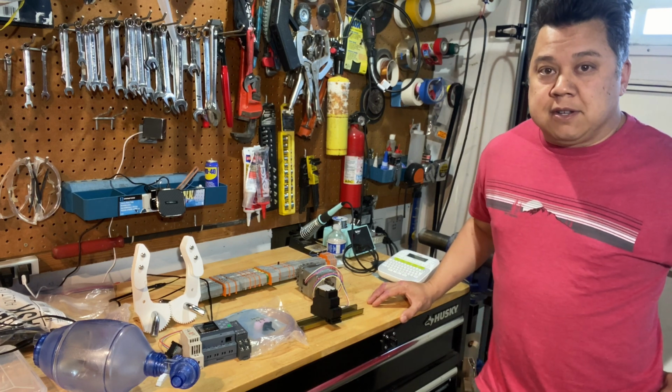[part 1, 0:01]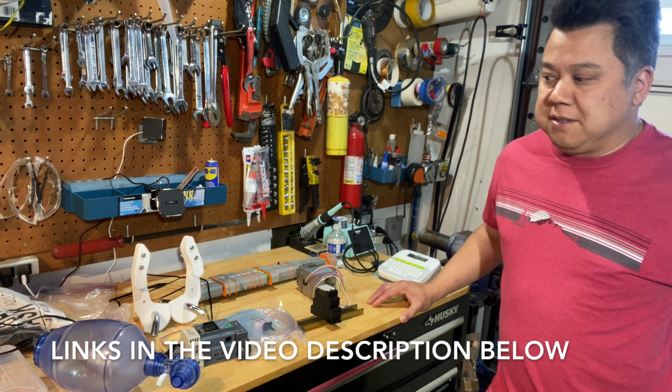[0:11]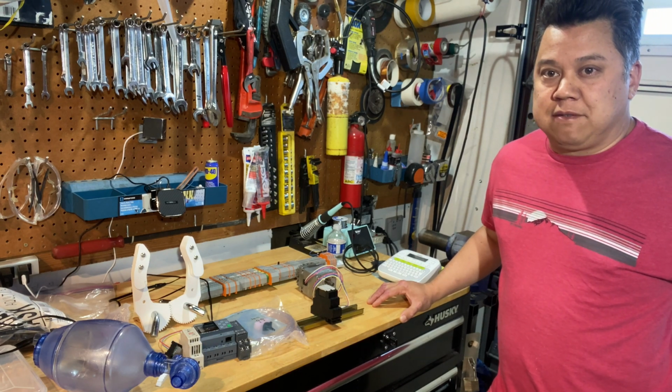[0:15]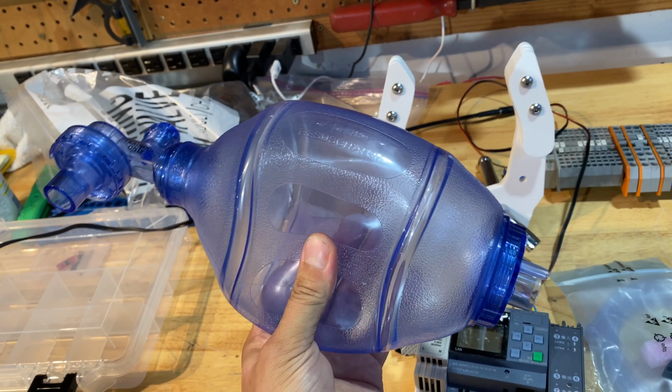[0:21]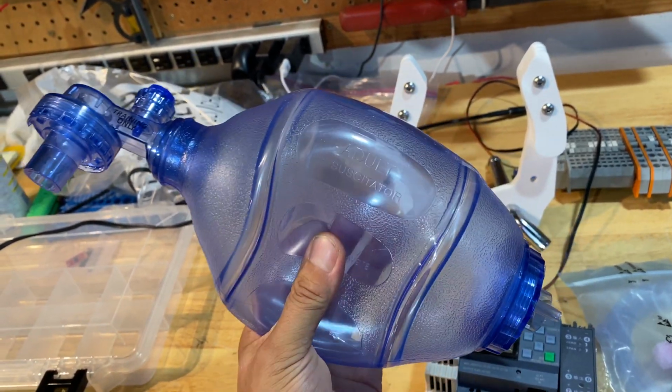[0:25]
Well, today I'm starting a new project, which will take me a couple weeks to complete, I think. I'm going to try and build a low-cost ventilator using plans online from different websites, and I had a bunch of parts come in today, so I'm going to show you what I've got on hand and some of the parts that I've started fabricating. So let's take a look. I don't know medical device terminology, but I'll do my best.
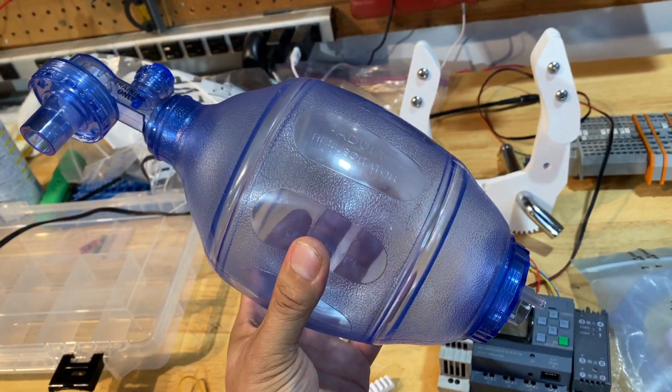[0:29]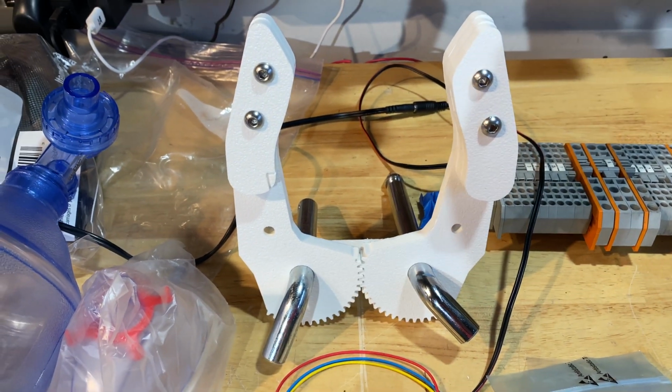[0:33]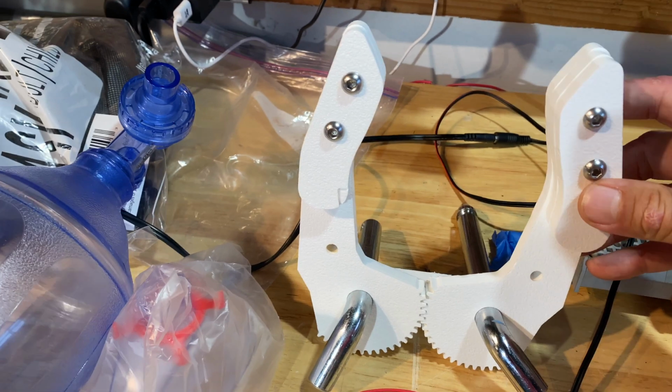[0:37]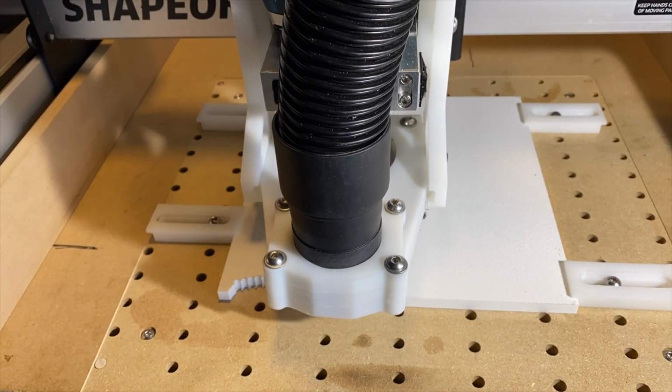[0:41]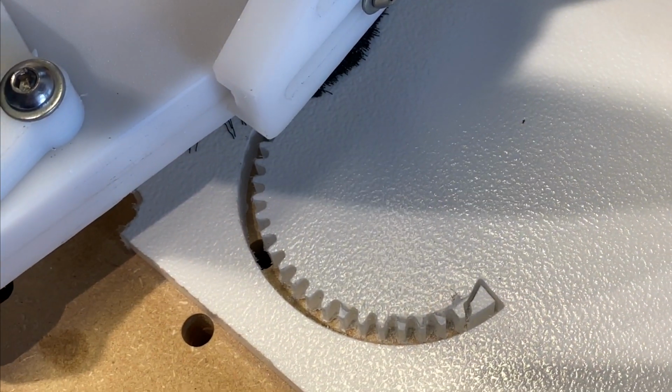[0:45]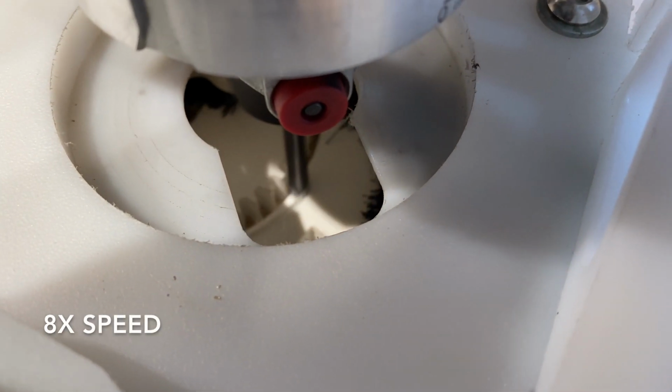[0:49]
So this is the breather bag, and I've started fabricating these hands, which will squeeze the bag. I built these on my Shapeoko CNC machine. Machining just the teeth took about an hour per arm. I used a 16th inch end mill for the teeth, and then I went back with a 1/4 inch end mill to cut the rest of the arm out and drill the holes.
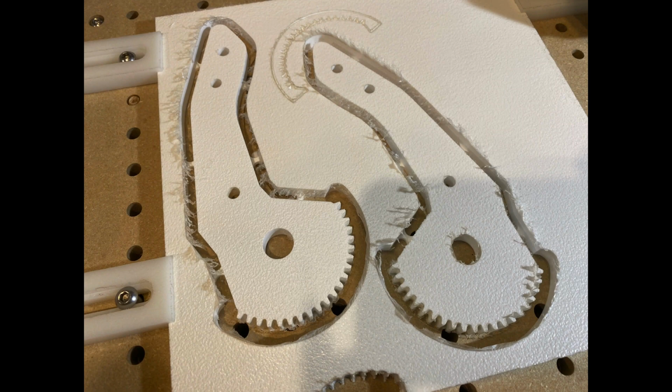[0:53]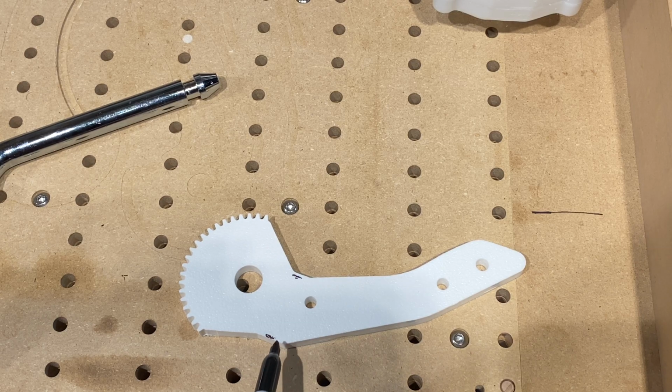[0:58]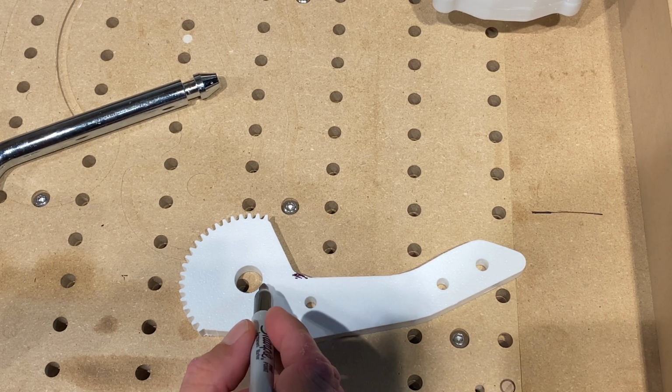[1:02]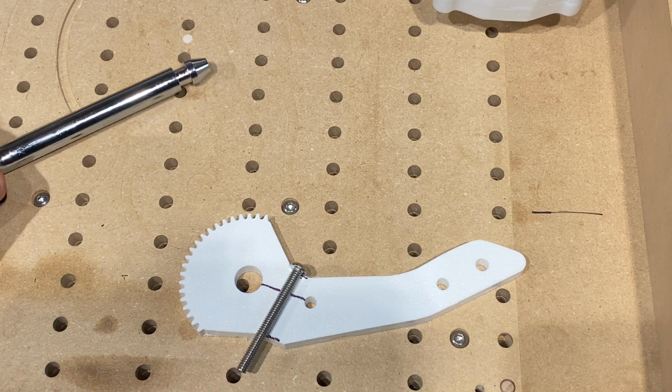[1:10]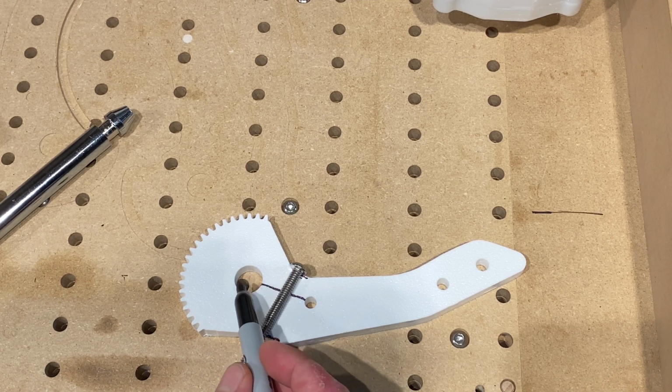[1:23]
I modified the original design of the arms by putting a flat spot here at the top and bottom, and if needed, I can cut a slot here so that the arm gets pinched onto the shaft rather than rotating on the shaft. So I can add a pinch bolt and a nut on the other side. And this is so if I want to go direct drive to rotate the arms, instead of using the gear teeth to move the arms, I'll have that option.
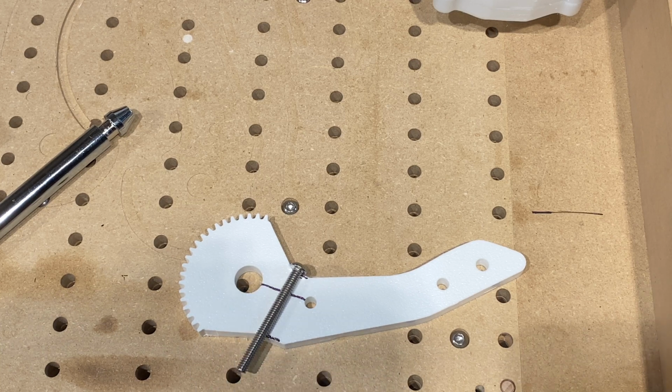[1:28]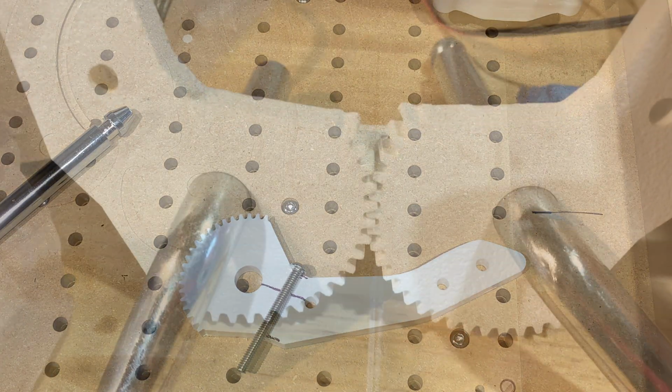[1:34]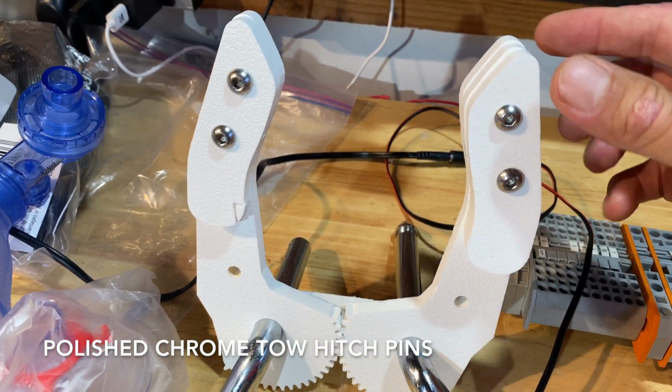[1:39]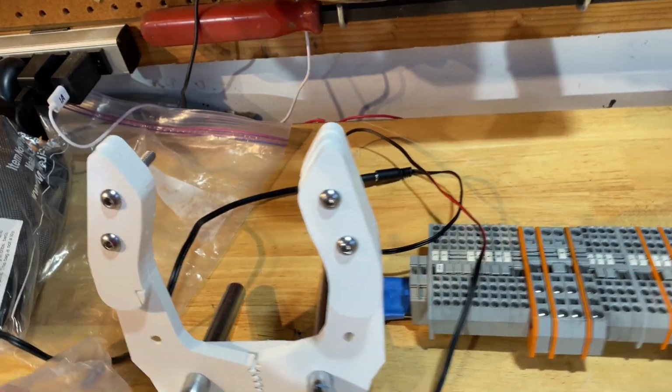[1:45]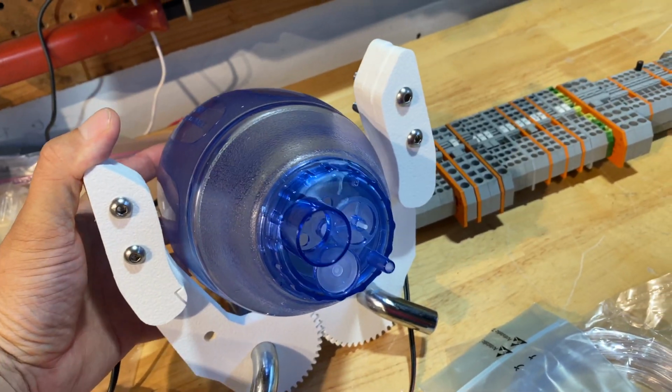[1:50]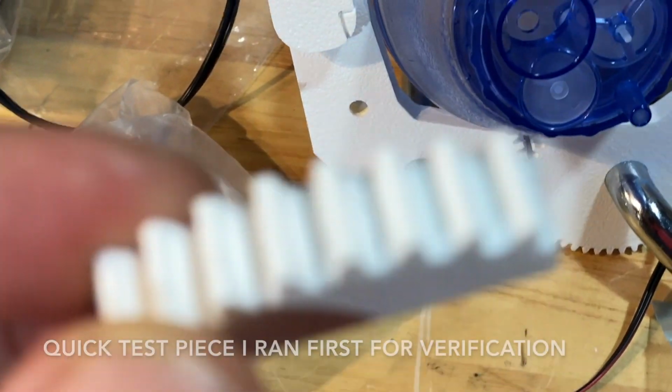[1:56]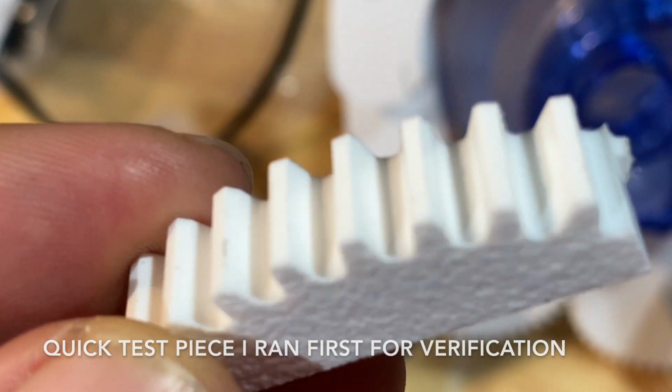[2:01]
I also went with a larger diameter shaft because I'm using plastic instead of aluminum. I wanted to spread that force over a larger area. So there'll be more fingers to spread the contact area over a larger area on the bag. So the bag will just fit in here, and the hand will squeeze the bag as a human hand would do. Here's kind of a close-up of the machine quality from my hobby CNC machine. It looks quite good, I think.
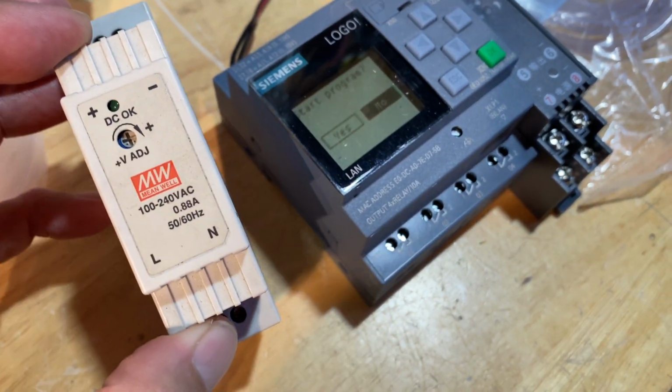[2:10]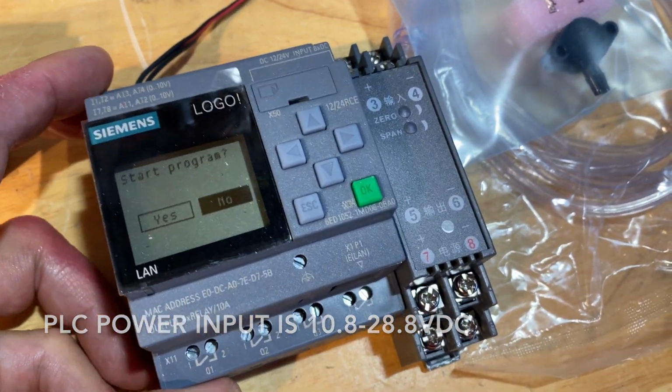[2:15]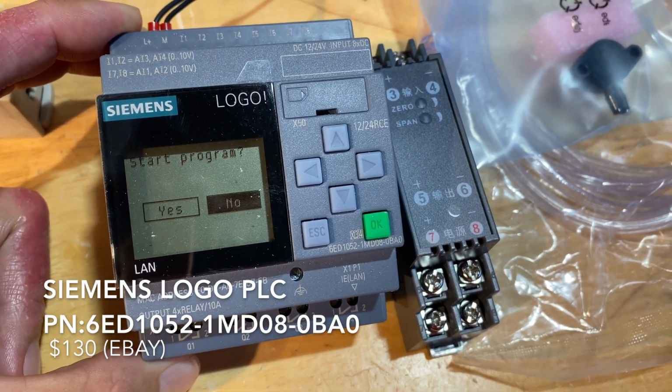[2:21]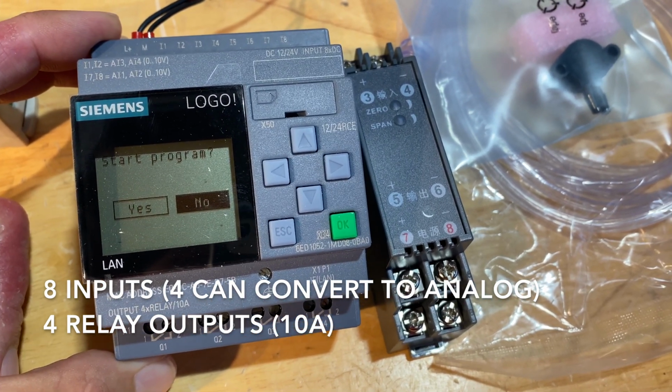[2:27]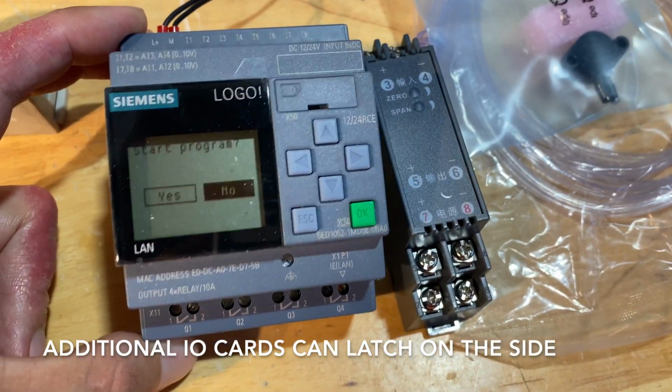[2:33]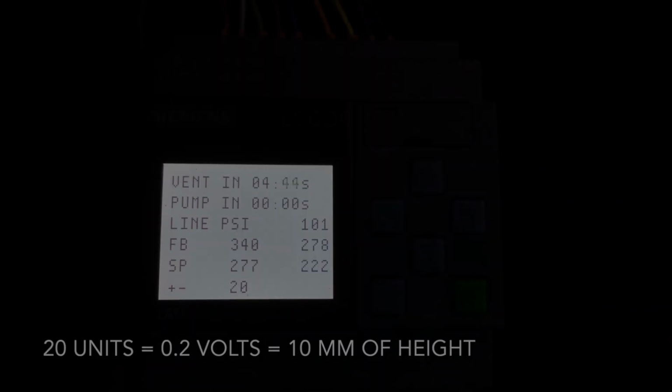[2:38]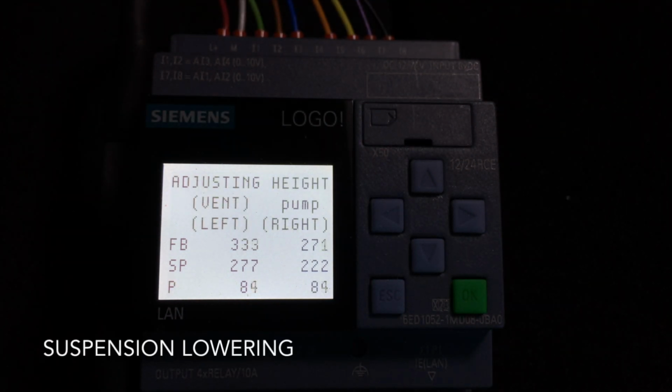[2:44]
This is just a 24-volt power supply to power the PLC. This is my PLC. It has 4 analog inputs, 4 digital inputs, and 4 relay outputs. And admittedly, relay outputs aren't ideal for this application because they'll be cycled a lot. I can add on a module to the side to increase I/O and get some solid state outputs. I really love these Siemens LOGO PLCs. This is the same PLC I used on my Volkswagen Touareg to control the air suspension that I added.
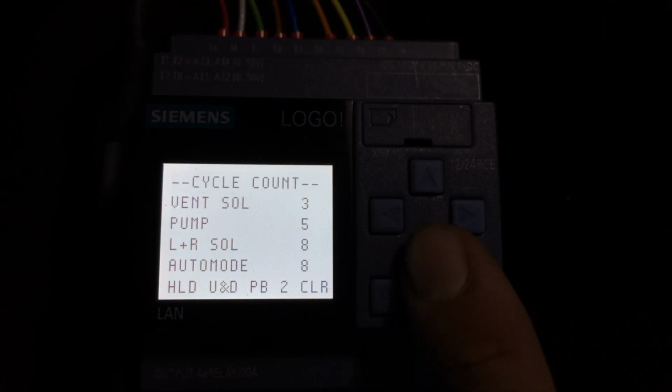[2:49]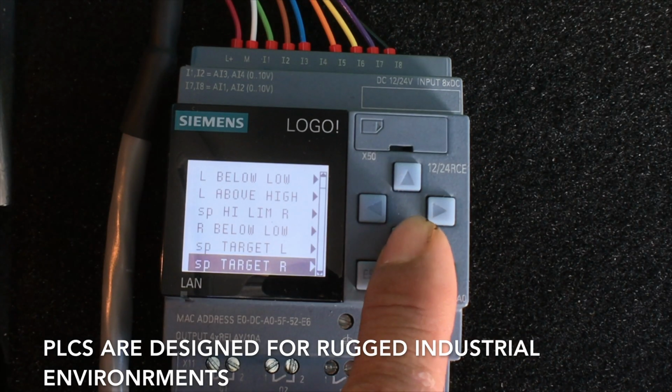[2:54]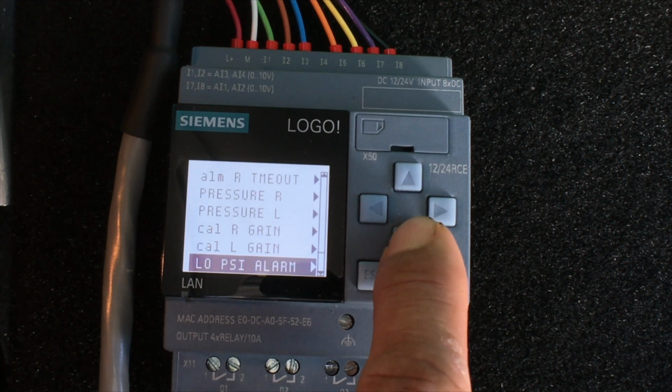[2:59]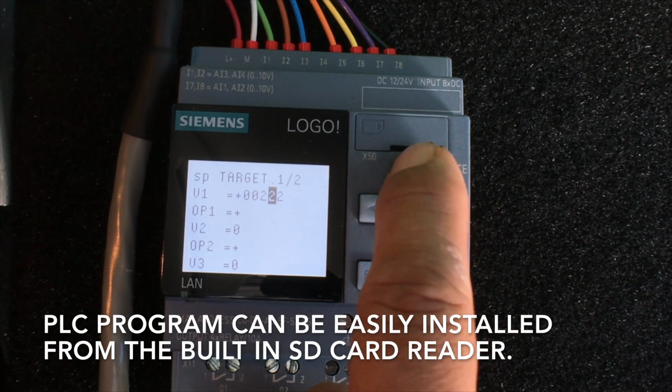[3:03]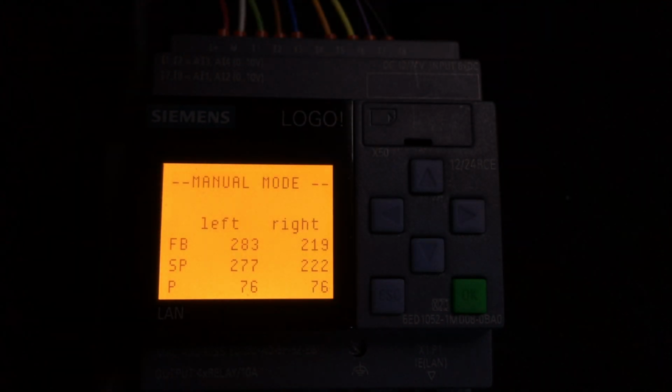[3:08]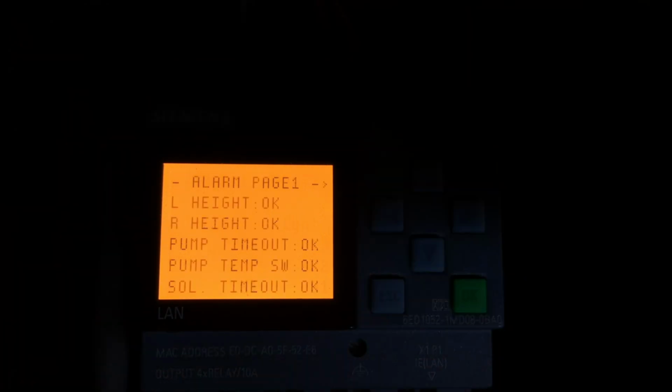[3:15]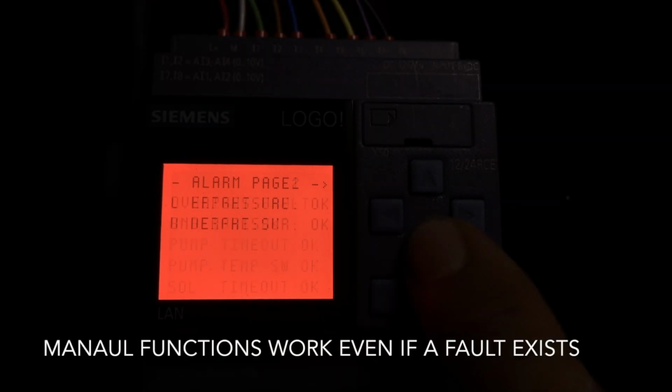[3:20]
It's really nice that it has a 6-line LCD. You can display a lot of information. You can display lots of screens. You can change any of the variables and timer set points inside the PLC. Pretty much any variable or constant you can change. You can also change the backlight color. So if you have a warning pop up, you can have it turn orange. Or if you have an alarm come up, you can have it turn red or flash different colors. They're really handy, quick to program. They have SD card slots and Ethernet built in.
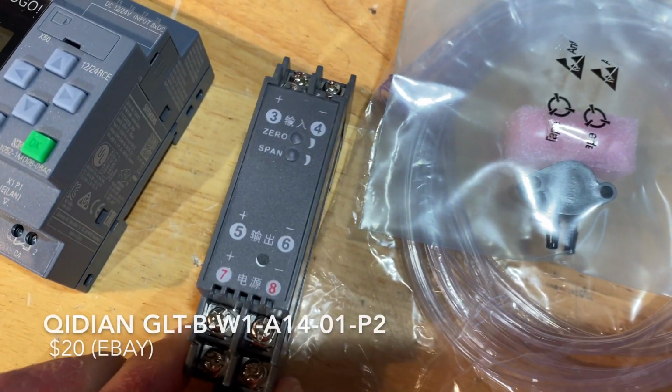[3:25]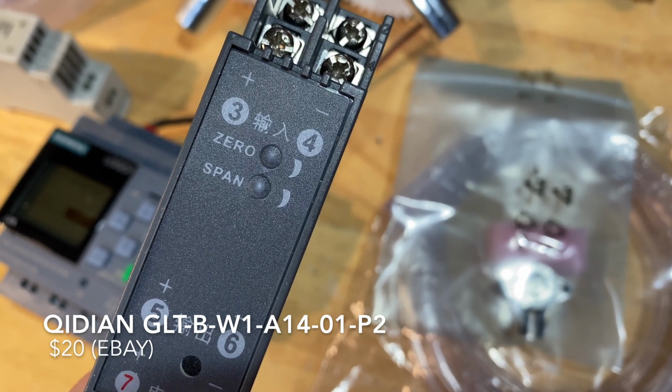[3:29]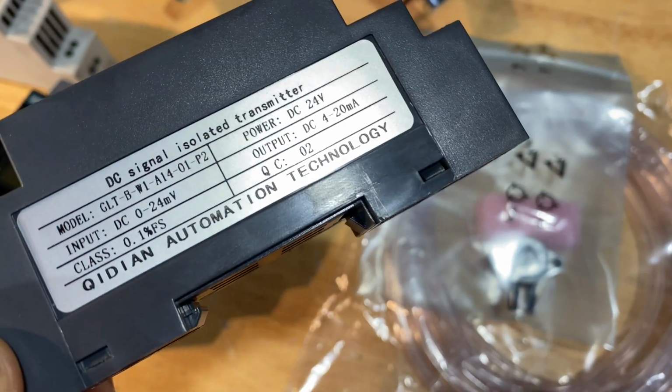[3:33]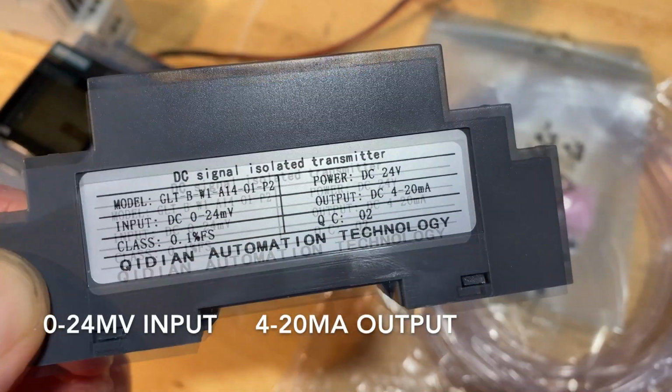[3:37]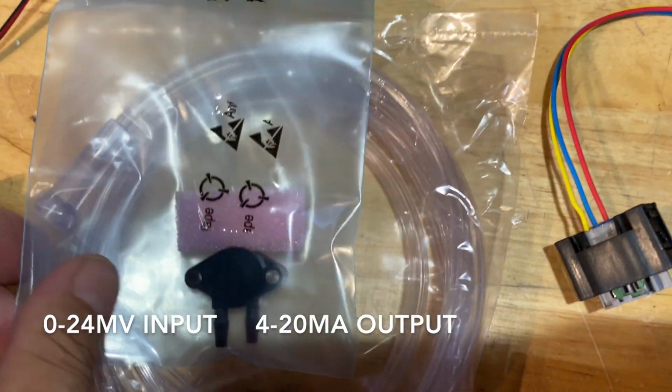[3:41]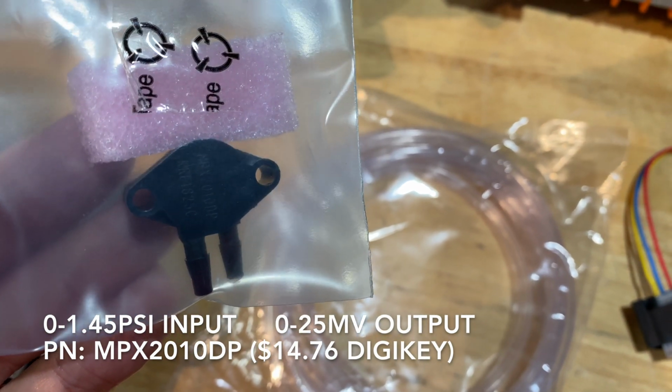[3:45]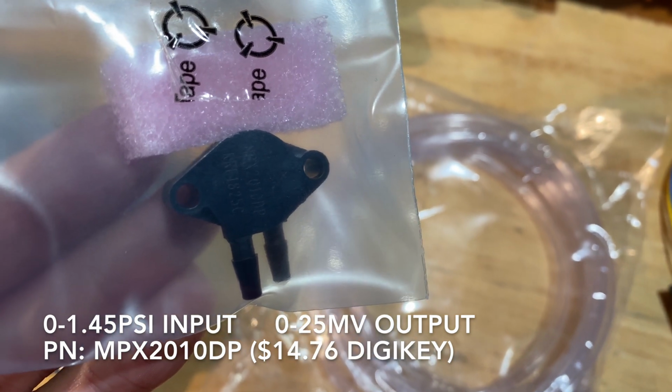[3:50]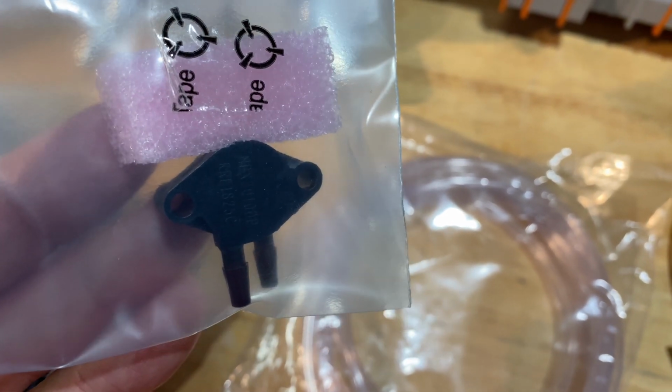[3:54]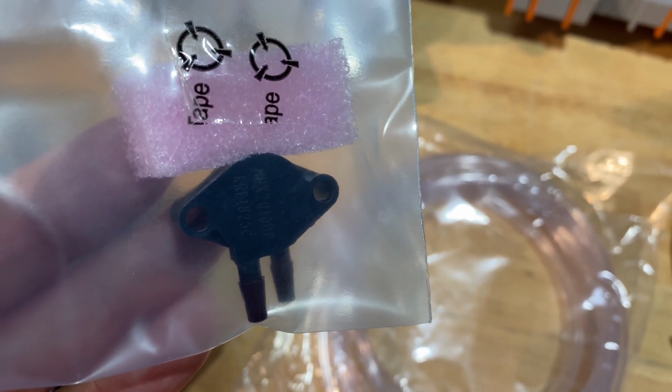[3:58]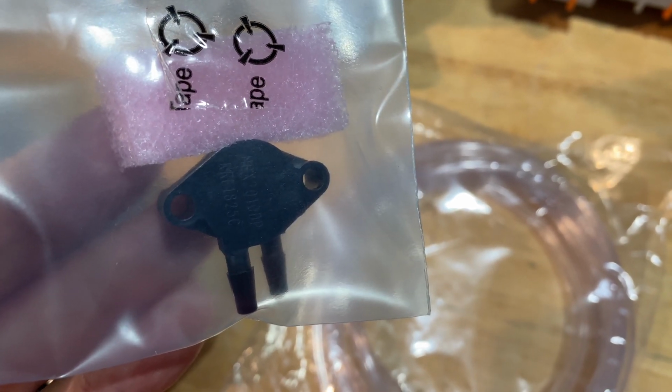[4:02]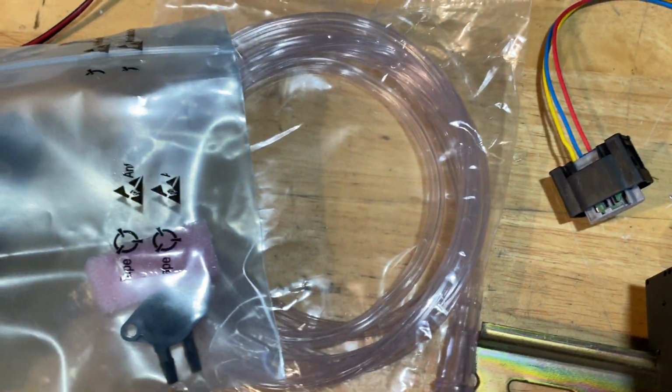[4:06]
This is a signal conditioner. It kind of acts like a load cell amplifier. So you can adjust span and zero of the output, and it's basically converting 0 to 24 millivolts into a 4 to 20 milliamp signal that the PLC can read. And that will be connected to this pressure transducer. This pressure transducer measures up to 1.5 psi, which is about the max that a human can breathe out. And this will be used to measure the patient inhaling, and that will be a trigger to start the next cycle of breathing from the bag. And this is just some hose to hook up to the breathing mask to measure pressure.
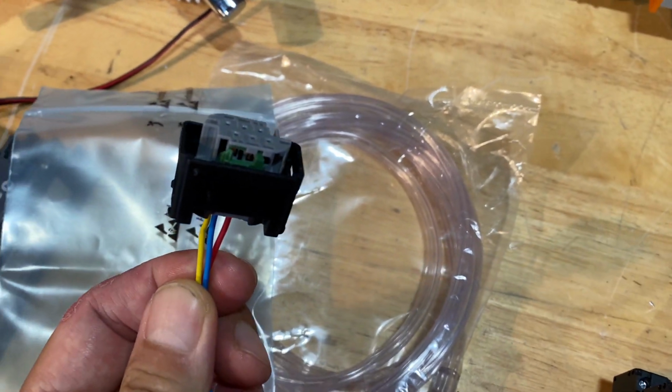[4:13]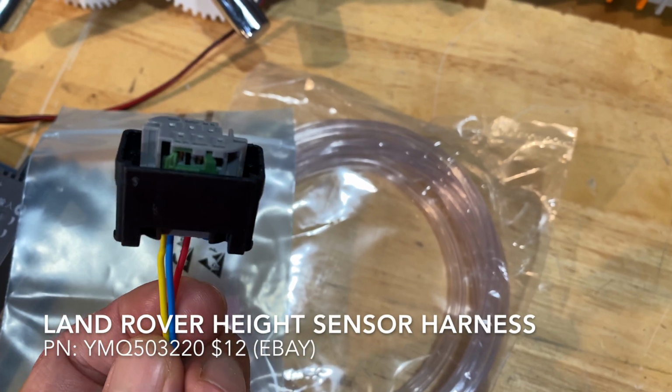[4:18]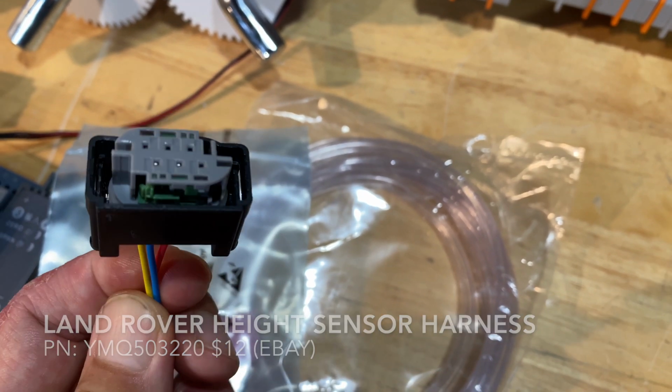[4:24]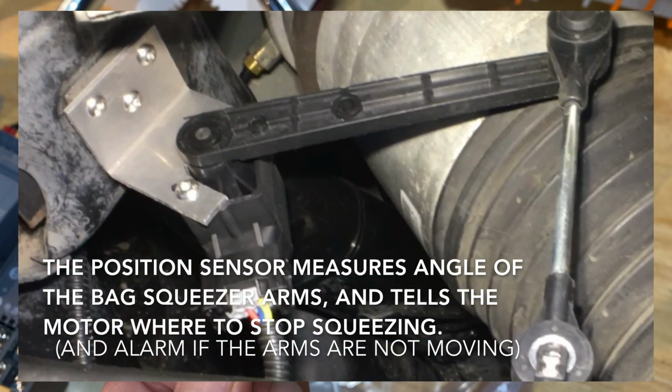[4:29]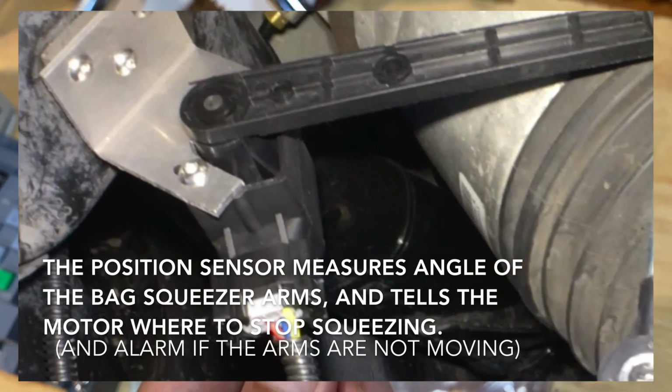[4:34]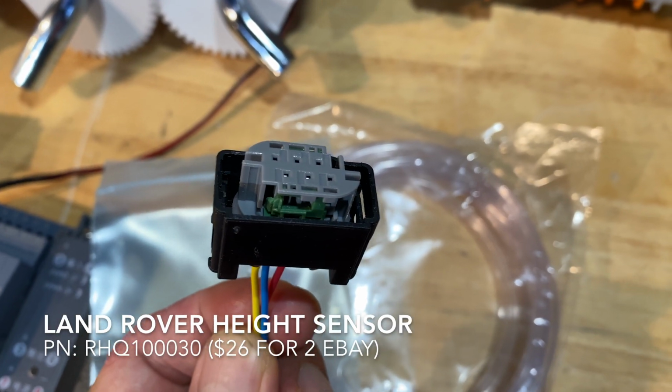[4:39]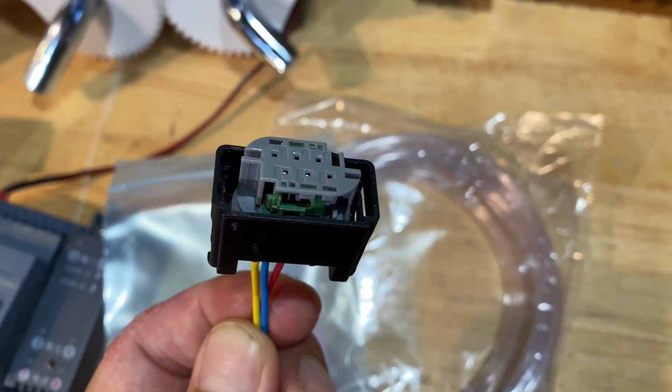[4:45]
I don't have my LVDT or Hall effect position sensor yet, but this is the wire harness for it. I'm using Land Rover ride height sensors because they're cheap. They're like $15. They're ruggedized, they're submersible rated, and they're rated for like continuous movement. And it's not like a wiper pot where the potentiometer will wear. This is a Hall effect sensor, so there's no wear involved.
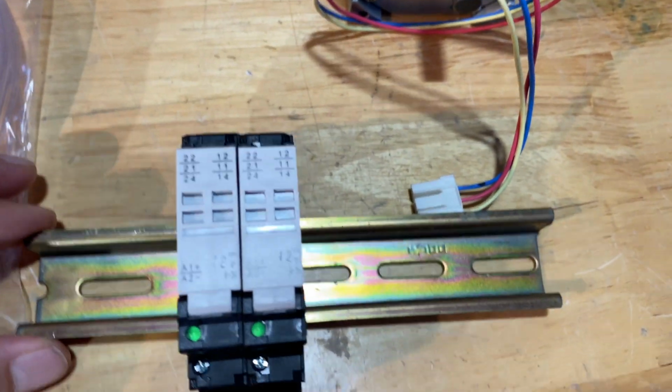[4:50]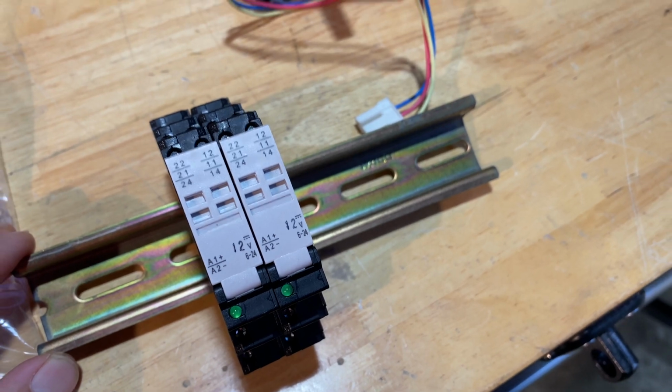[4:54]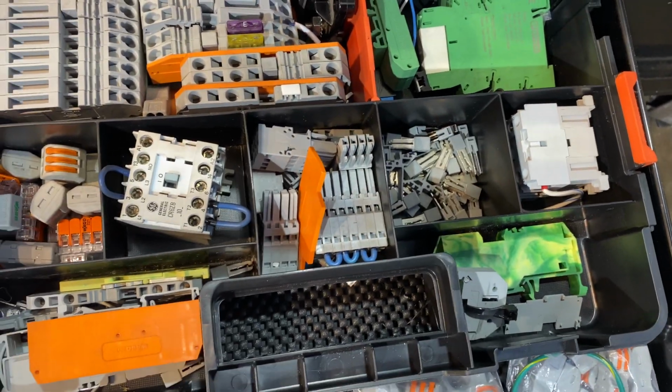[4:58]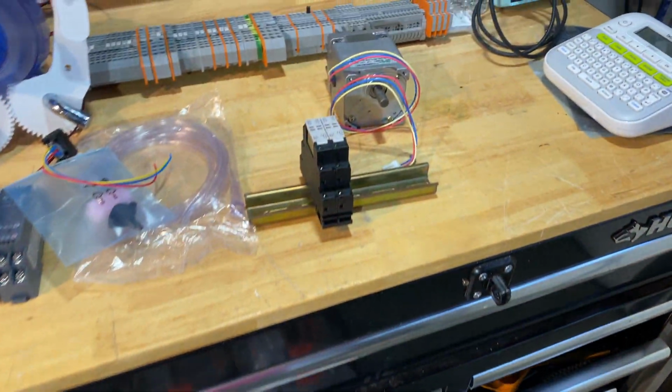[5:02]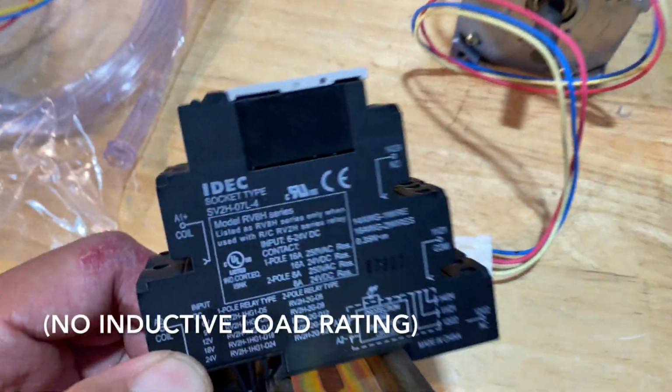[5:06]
I have these 2 relays that I'm going to use for driving this motor forwards and backwards. If those don't work, I have some larger contactors as well, but the motor is only 55 watts, so I think this little 16 amp relay should be more than sufficient.
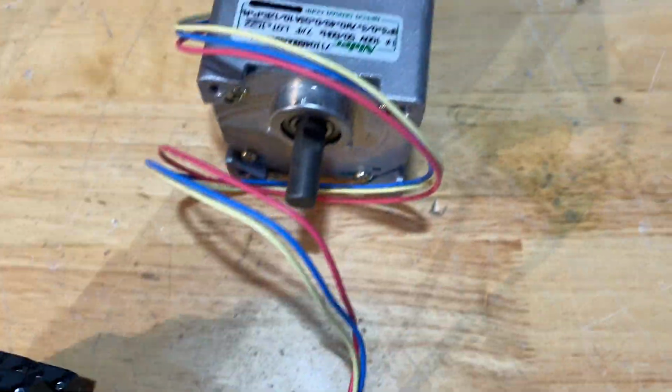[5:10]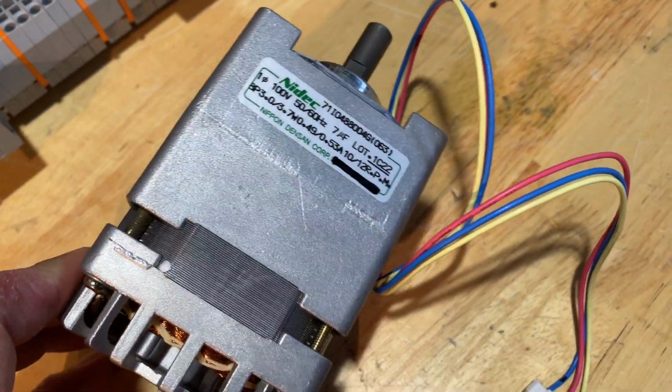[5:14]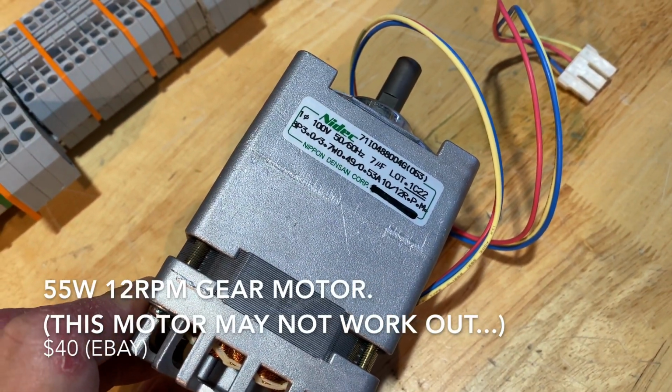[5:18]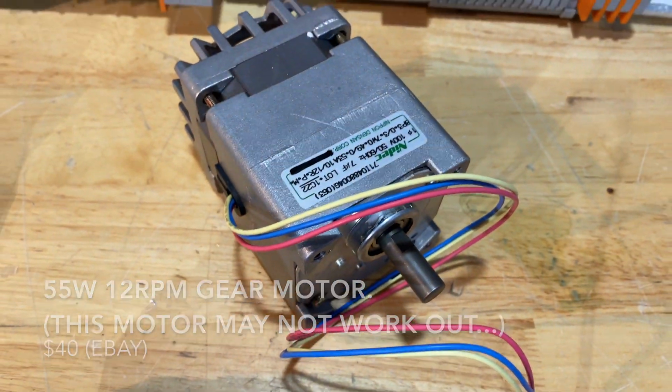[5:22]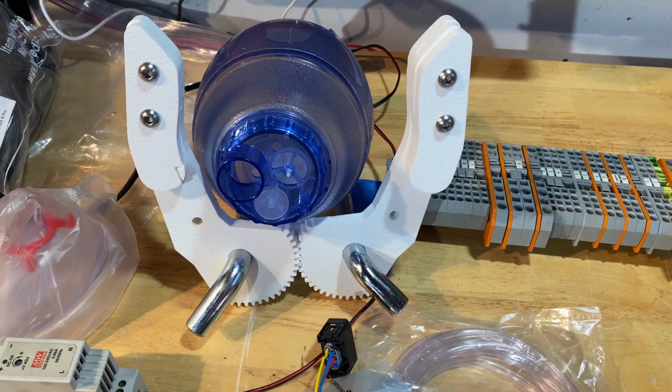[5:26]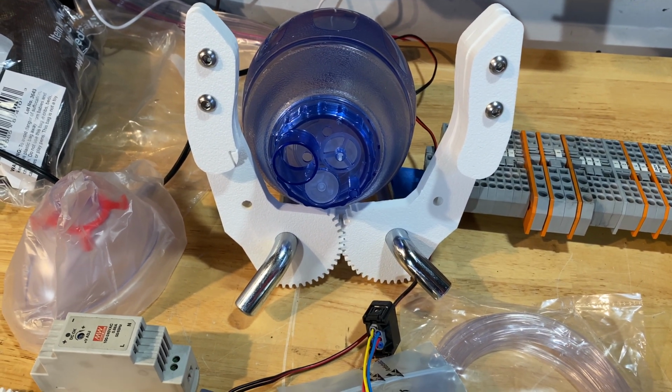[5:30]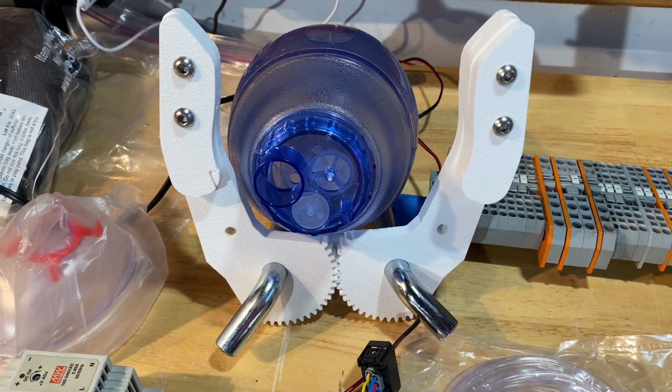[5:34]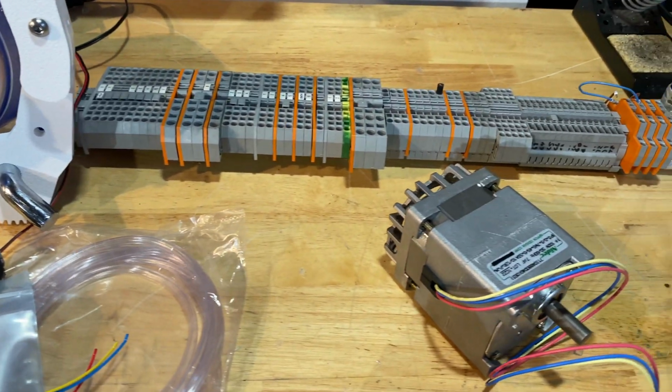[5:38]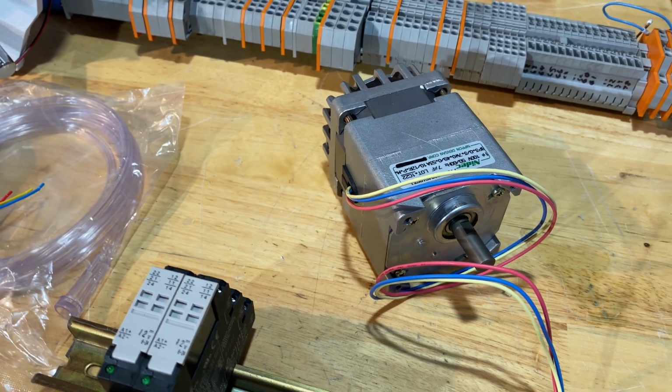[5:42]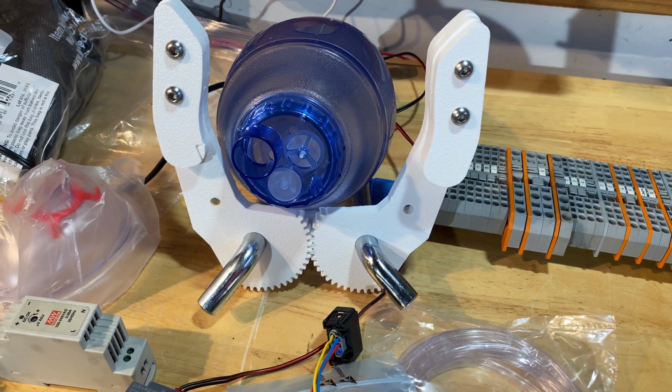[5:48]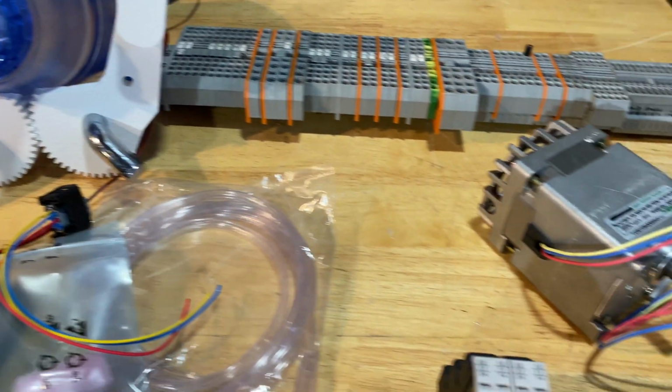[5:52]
This is my gear motor. It's rated to output 12 RPM, which means that it'll take 5 seconds to do one revolution. So I'm not quite sure if I'll need more gear reduction or not to slow the hand down. I want the hand to close in about 1 second. Depending on what size gear I make, I can change the speed of the hand. Ideally, this would be a DC motor and I could just pulse width modulate the RPM. So I may change the motor out for something more variable speed and ideally direct drive, but this was in stock and it's something to get me going.
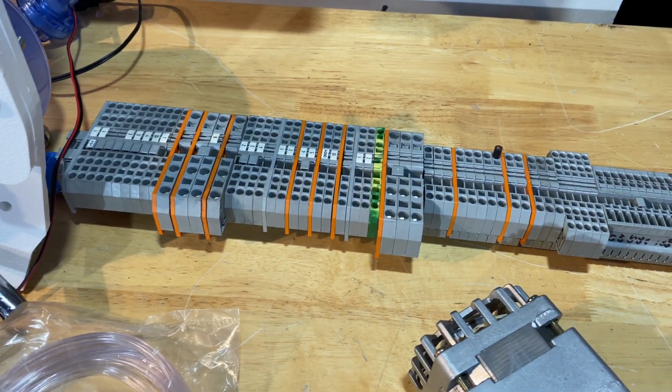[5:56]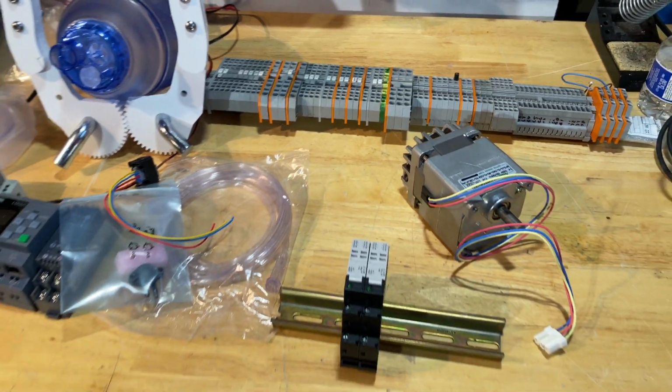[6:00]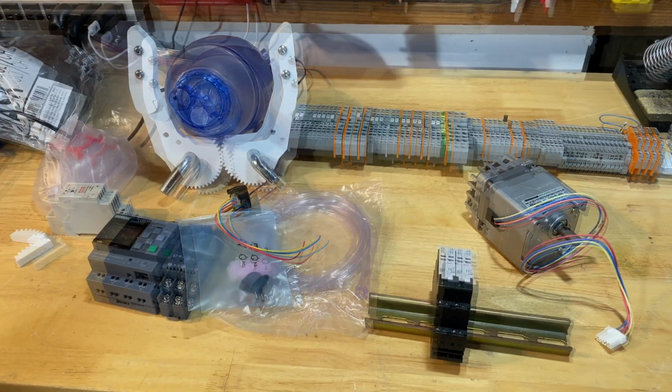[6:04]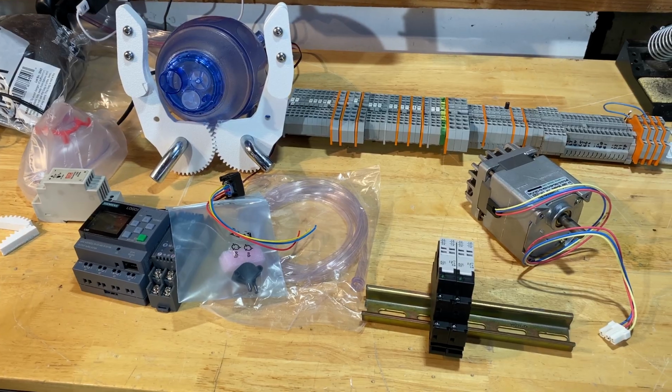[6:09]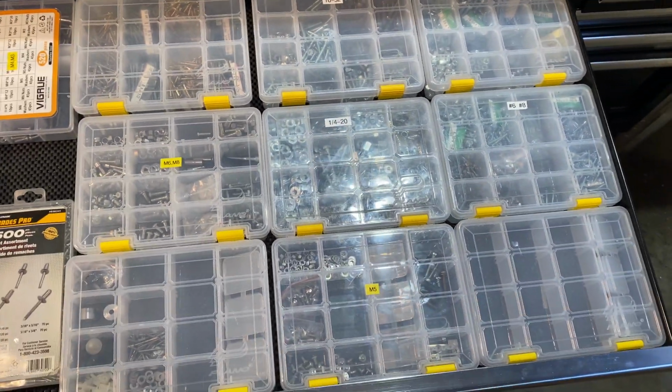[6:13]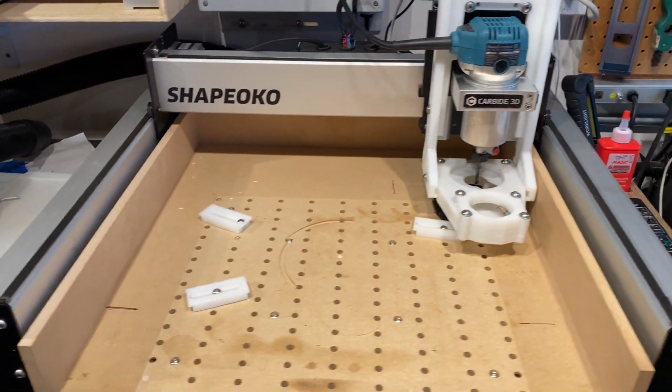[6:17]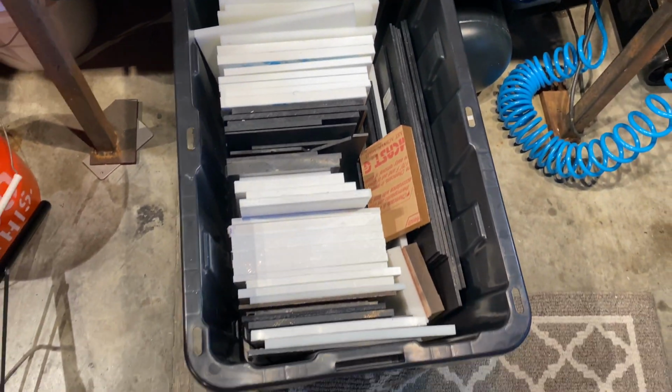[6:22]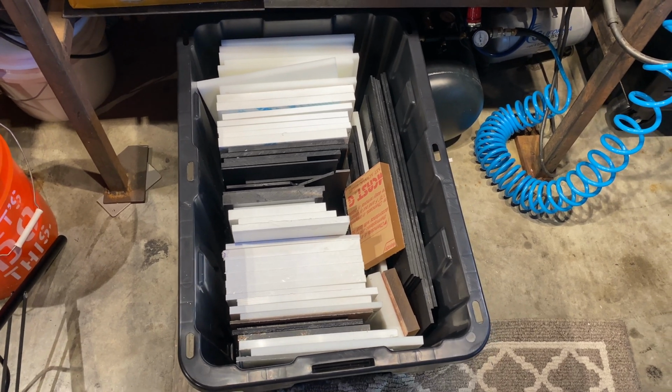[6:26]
And these are just a bunch of terminal blocks for connecting wires. So there you have it. This is all the parts I have on hand currently. I have a PEEP valve coming and an extension hose for the airbag. I also have a good stock of nuts and bolts. And this is the CNC router that I'm using. It's a Shapeoko 3. And I also have plenty of stock of scrap plastic from TAP Plastics.
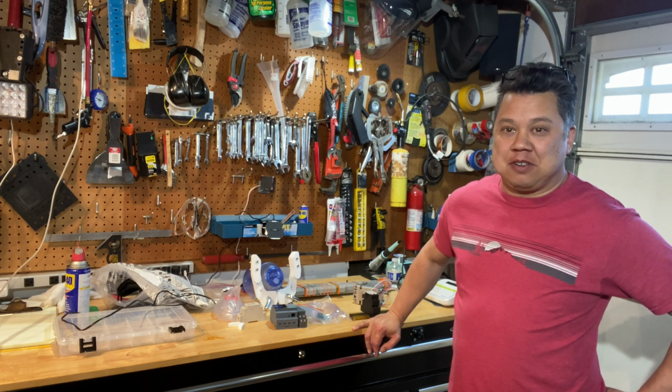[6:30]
Well, there you have it. I don't know if this project's actually going to come to fruition or not, but I have pretty much all the parts on hand and I'm excited to start putting it together.
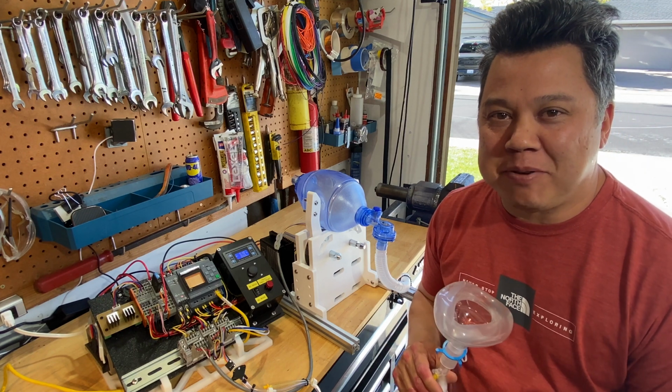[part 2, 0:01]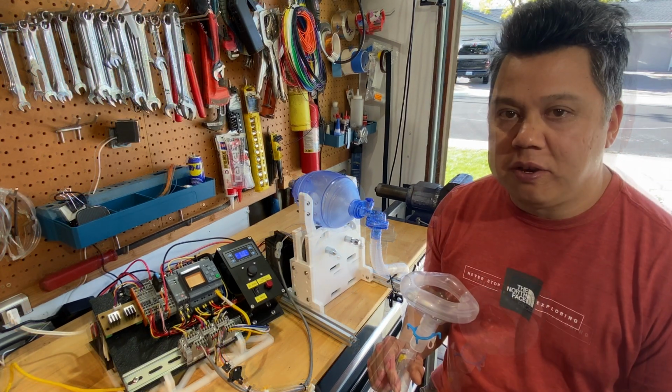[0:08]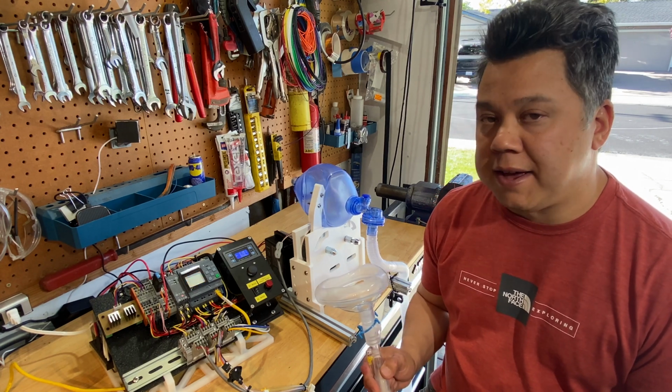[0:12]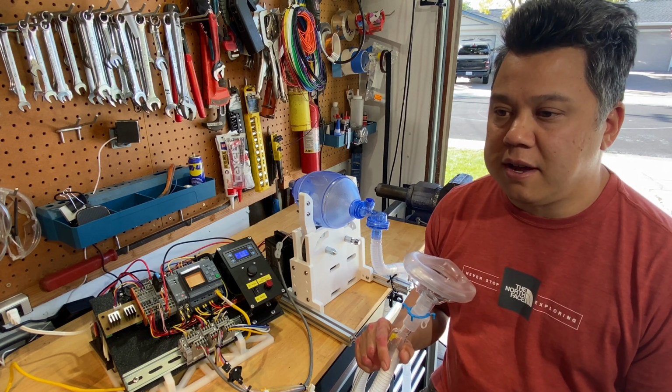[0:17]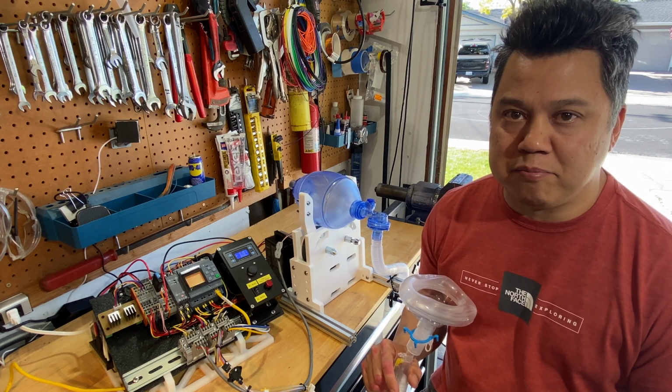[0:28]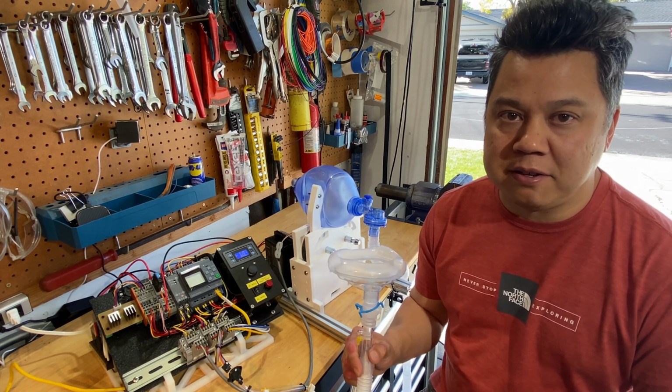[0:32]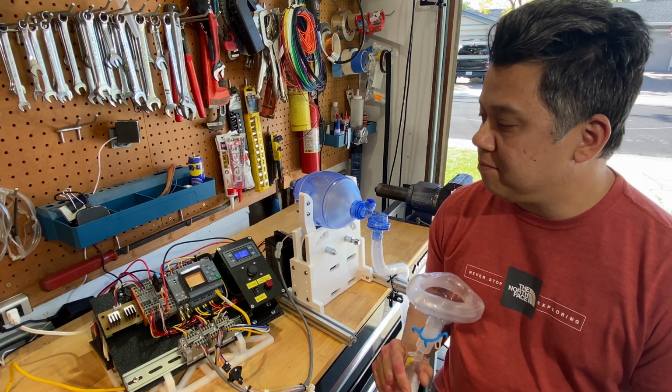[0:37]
As you can see, I have the hardware and software working now. One thing that makes this ventilator project different than others is that this one has a pressure sensor that senses when the patient is trying to inhale, and it times the breath cycle with the patient inhaling. That's different than a lot of the other ventilator projects that are out there that are just running asynchronously based on a timer. And they could be forcing air in while the patient's trying to exhale. So this one always stays in sync, and I can show you how it does that.
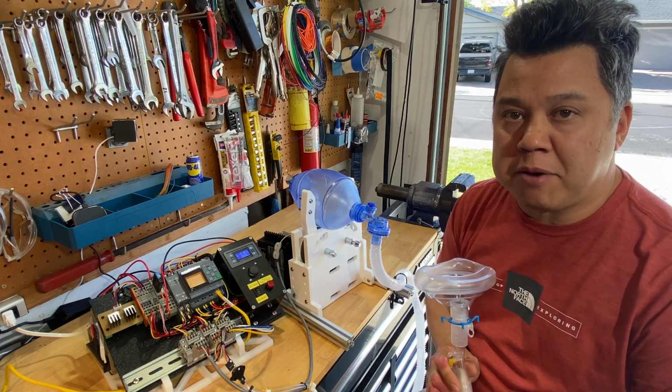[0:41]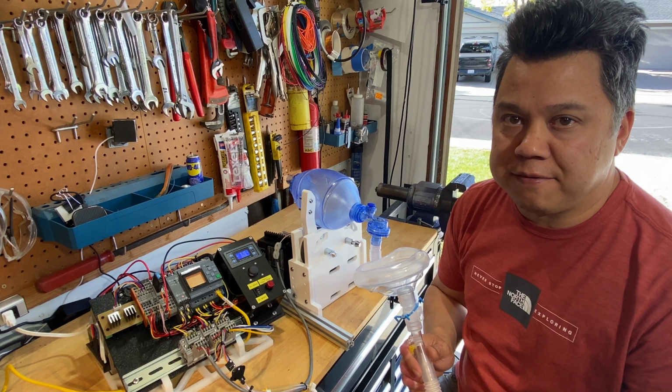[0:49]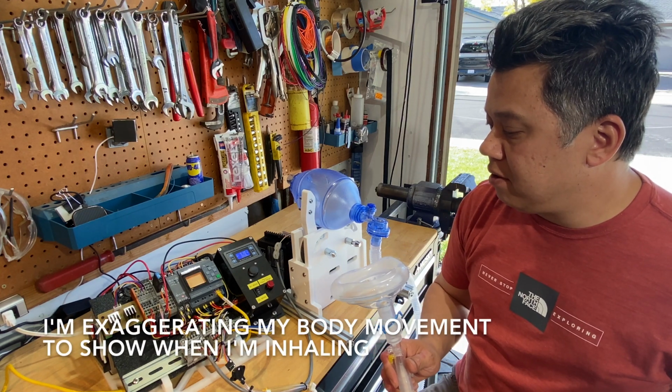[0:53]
The screen turns orange when it's in a wait state, waiting for the patient to inhale. And if the patient takes too long or the inhale's not sensed, it will force a breath after a few seconds, and that's all configurable on the screen. So I'll show you now how the breath sensing works.
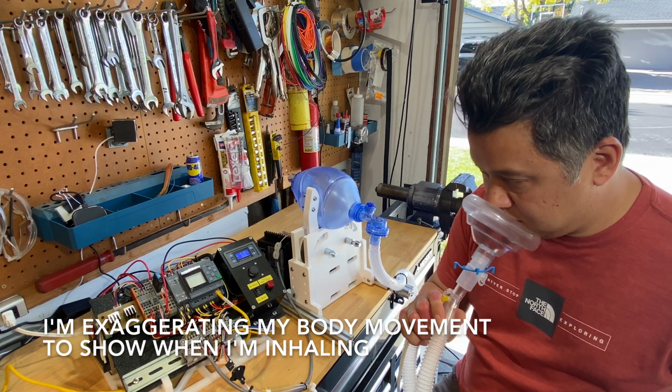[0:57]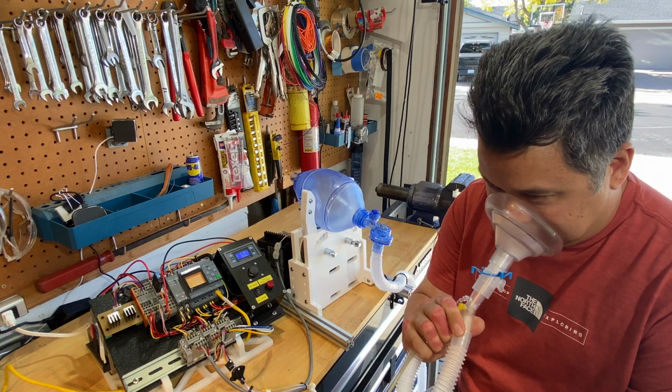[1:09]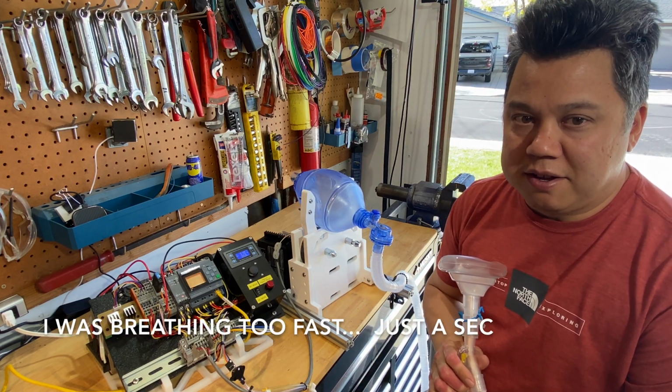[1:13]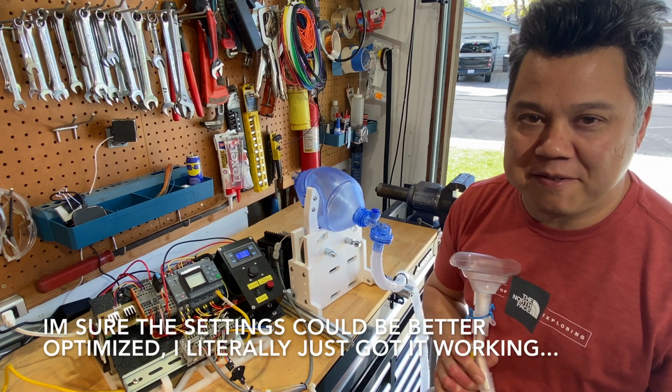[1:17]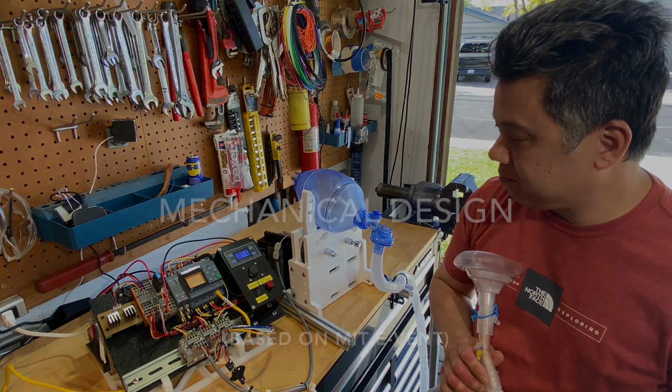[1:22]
The sensation's a bit like breathing through a scuba regulator. I've never used a ventilator before, so it's kind of a new experience for me.
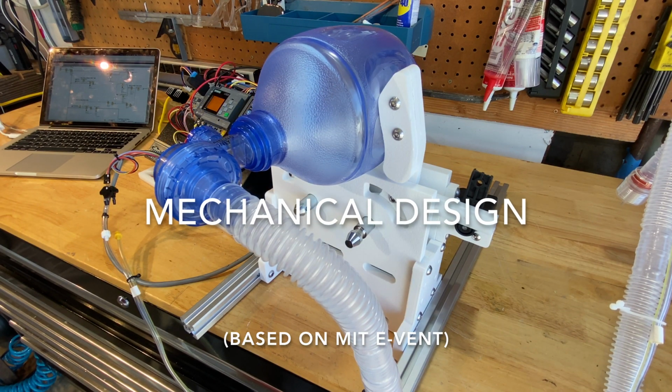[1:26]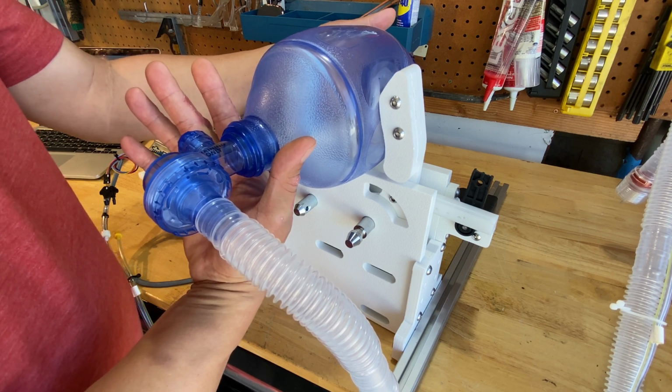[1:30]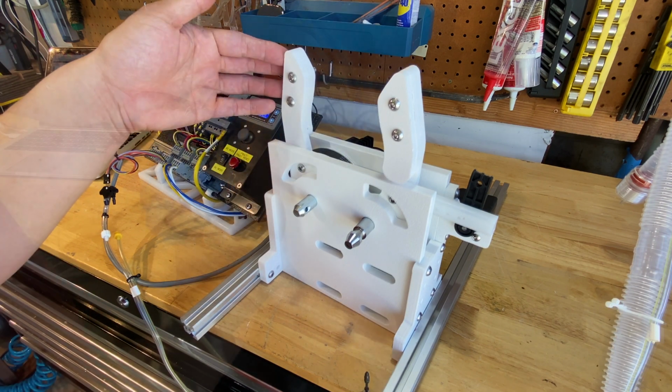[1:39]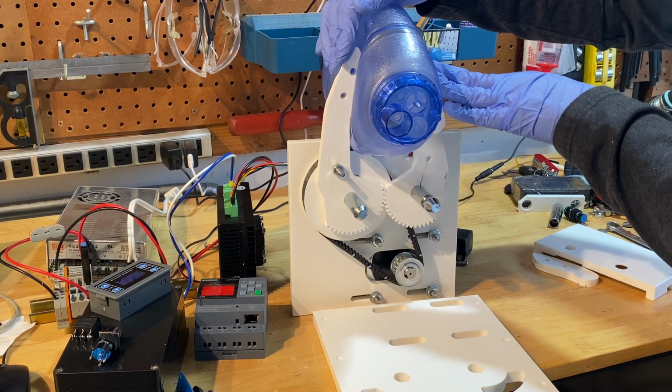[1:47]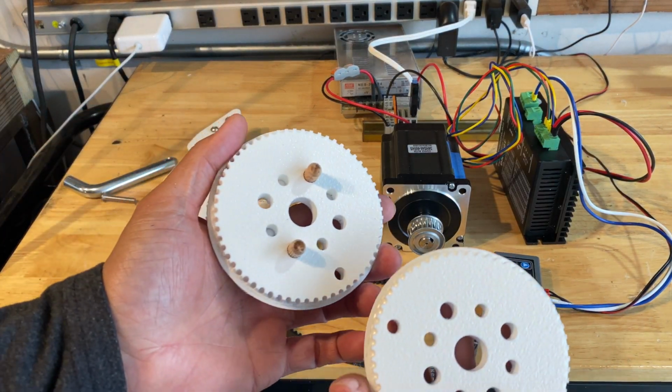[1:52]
This is the mechanical portion of the project. I'll obviously have a cradle here to hold the bag in place, but I didn't want to waste the plastic because all the stores are closed at the moment because of the coronavirus. The arms are driven by a timing belt and a stepper motor. I'm using a NEMA 34 stepper with a 3-to-1 belt ratio. I made the timing belt sprocket on my CNC machine. Well, this is how the timing belt sprockets came out.
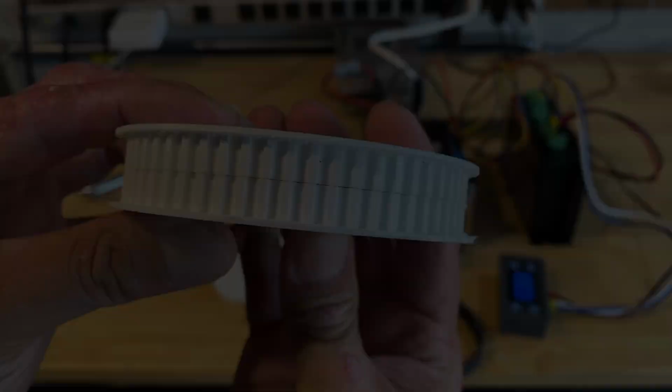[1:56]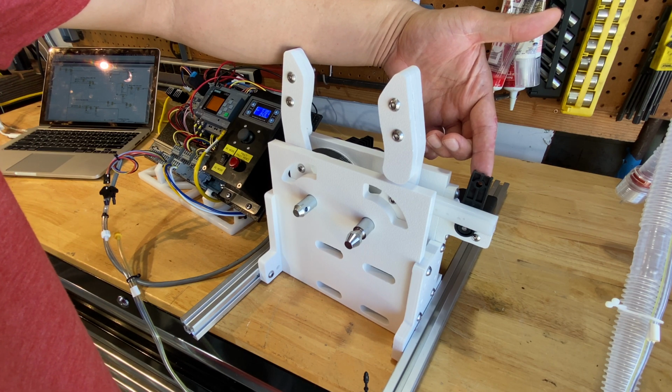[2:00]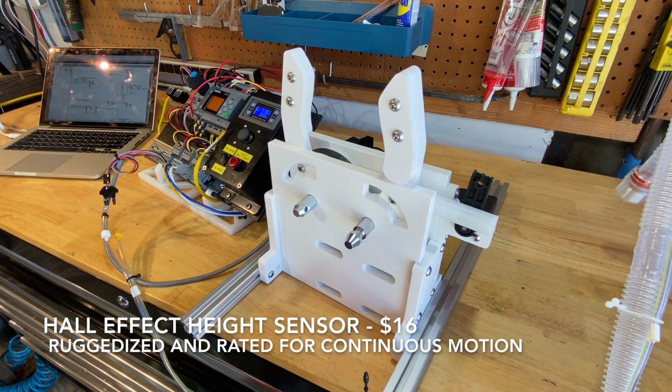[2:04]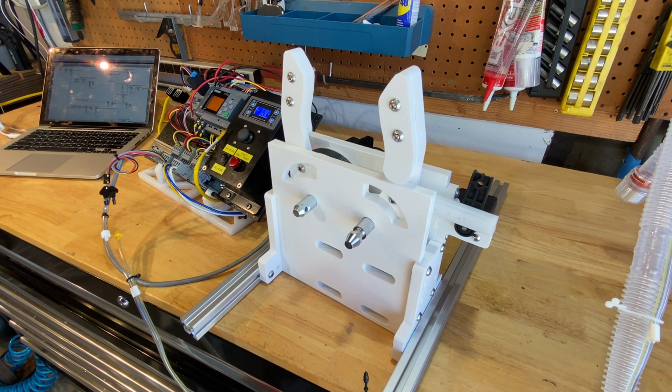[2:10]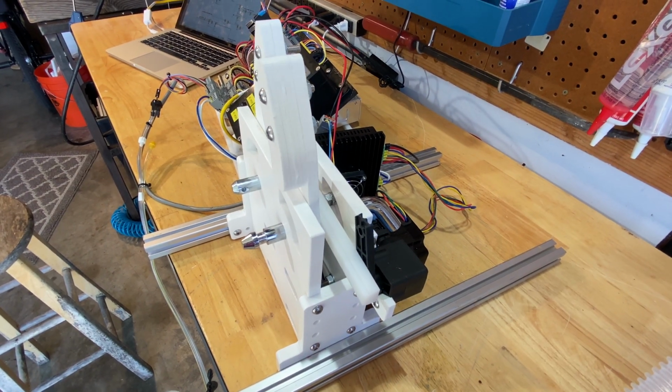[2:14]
I'm using this angle position sensor. This is from a Land Rover. It's used to measure the ride height on the air suspension. And it's a solid state device that uses a Hall effect, so there's no wiper arm that's gonna wear out. This position sensor is what allows the PLC to control the open and closed position of the arms.
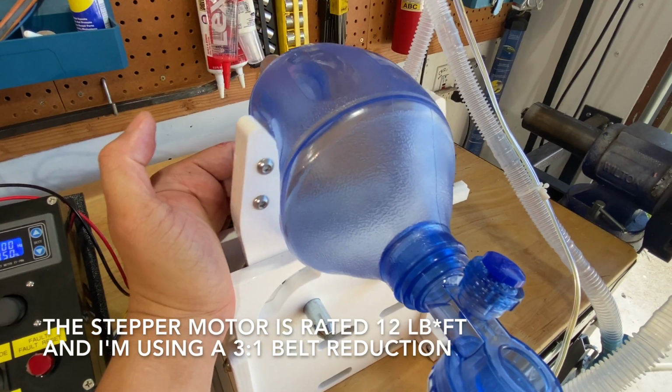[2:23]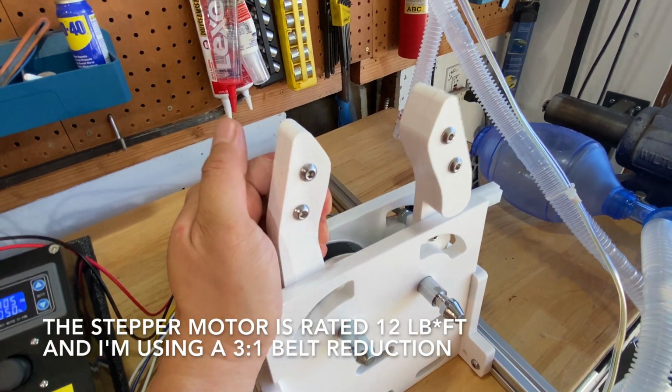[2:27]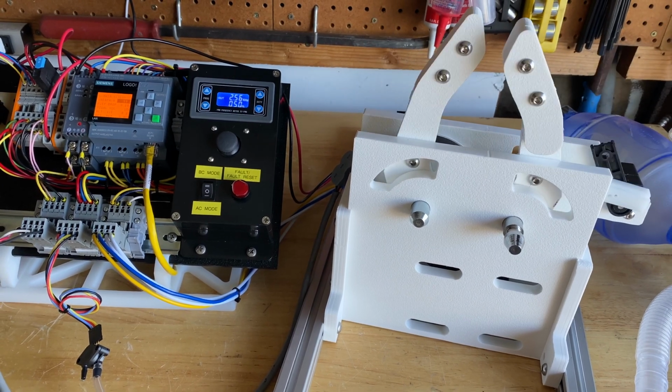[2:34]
The arm's quite strong. It's closing with about 25 pounds of force. There's not much I can do to stop them from closing. Just curious to see how fast we can go.
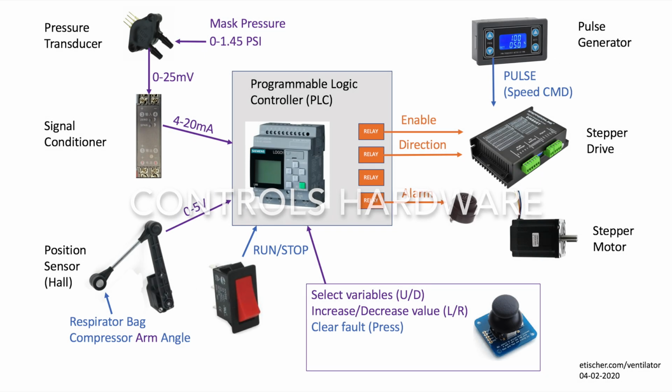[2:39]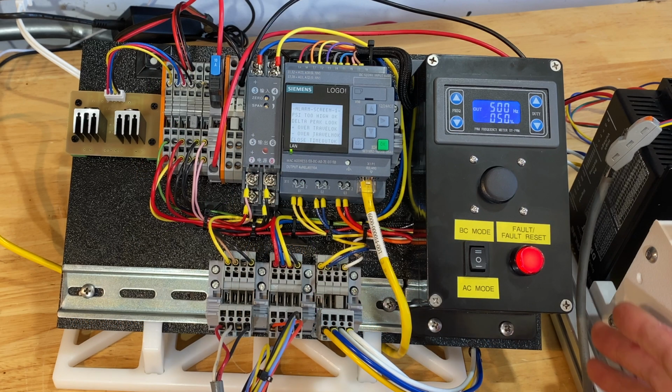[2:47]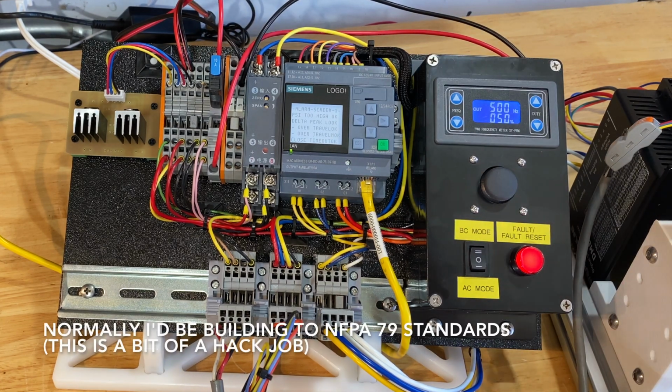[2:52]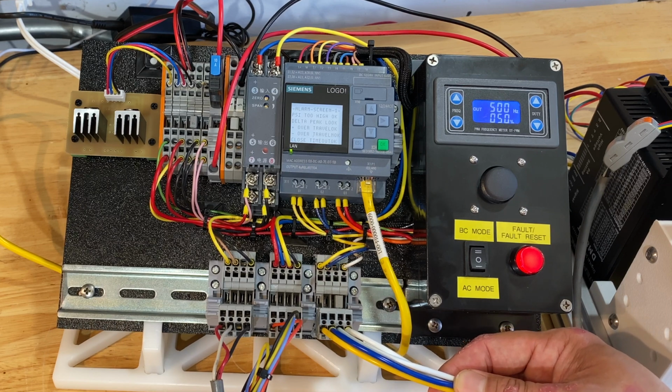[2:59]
This is a bird's eye view of all the controls hardware involved, basically all the inputs, outputs, and sensors. This is the control panel that I built. The incoming power is 24 volts, and coming out of the panel are three cables. This cable goes to the stepper drive, and this tells the motor speed and direction. This cable is for my pressure sensor. This pressure sensor measures 0 to 1.45 psi. And the third cable is for the arm position sensor.
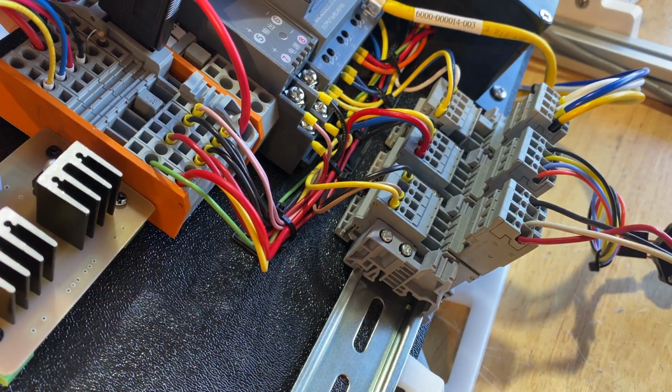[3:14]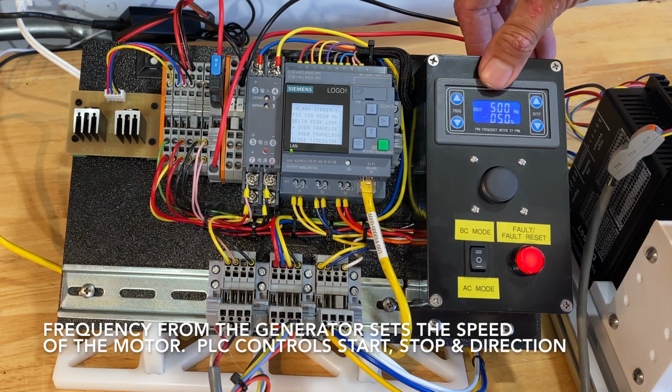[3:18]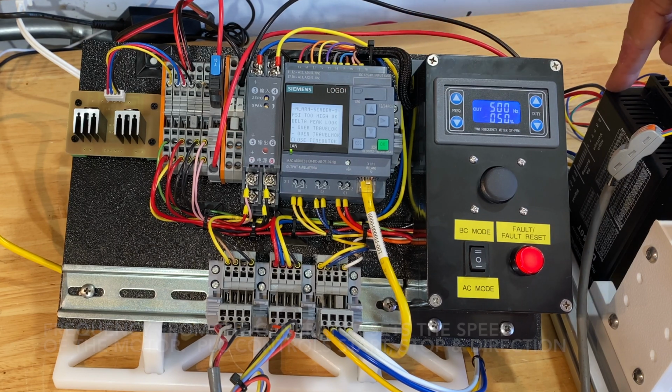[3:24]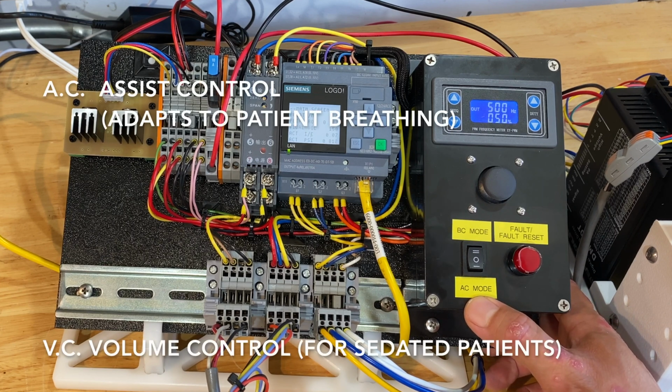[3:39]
On the right here, I have a function generator. The pulse width modulated output from this function generator goes through the PLC, and that gets sent to the drive amplifier. This is a joystick, which I decided not to use. This is a fault reset button, and it illuminates red if there's a fault. And this is the on-off switch. It can run in either AC mode, which I demonstrated earlier. BC mode just runs in an asynchronous timed mode.
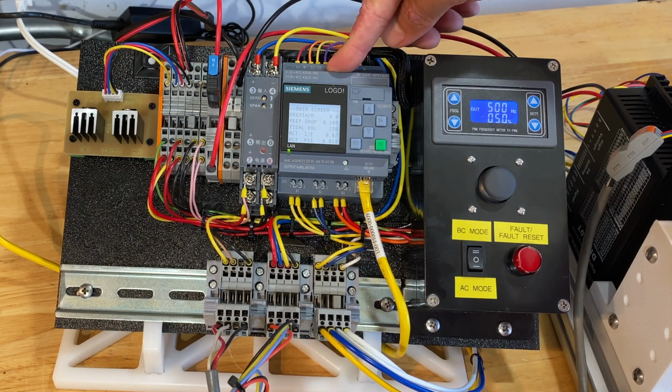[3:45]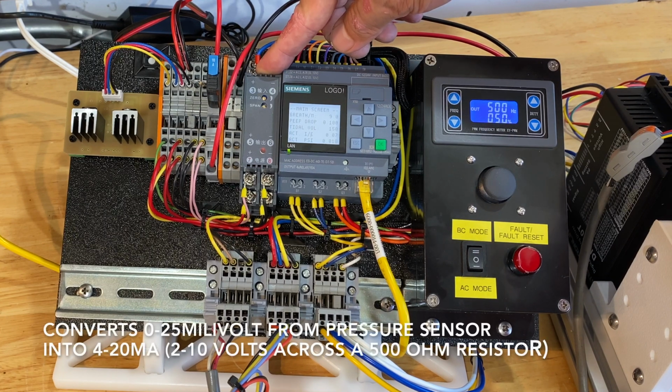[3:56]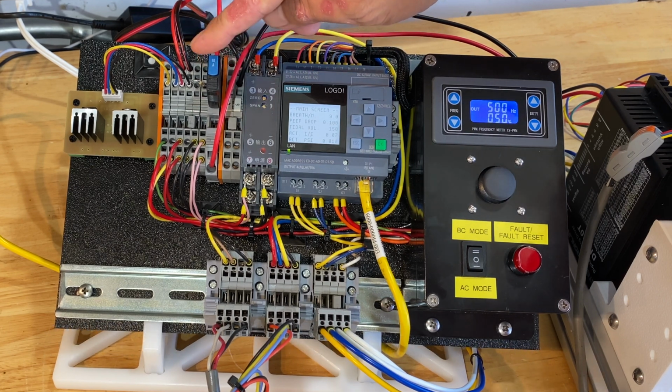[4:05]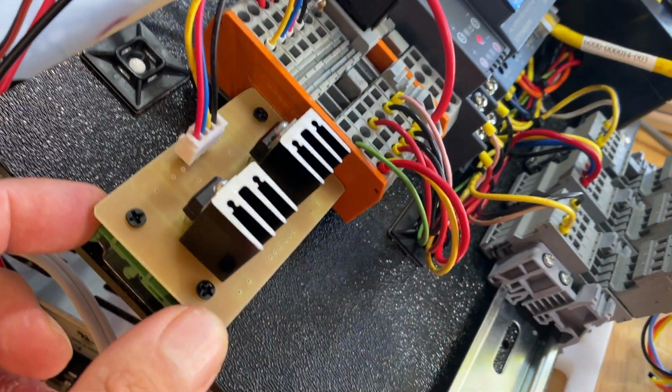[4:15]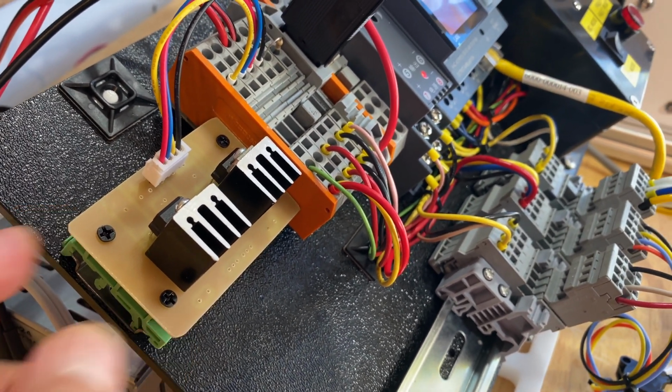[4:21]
This is the PLC, and that's what all these inputs and outputs are connected to, and this is what's controlling the sequence. This is an amplifier, which converts the 0 to 25 millivolt signal from the pressure transducer into a 0 to 10 volt signal that the PLC can read. This is a circuit breaker. This is my on-off switch for killing power to the servo drive. And the PLC communicates with Ethernet to my laptop for programming. This is the PCB I made that has a 0 to 10 volt and 0 to 5 volt output. And underneath, I have a 24 volt power supply for running the stepper motor.
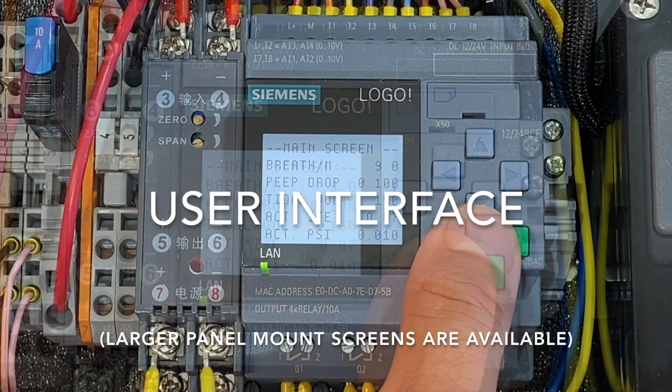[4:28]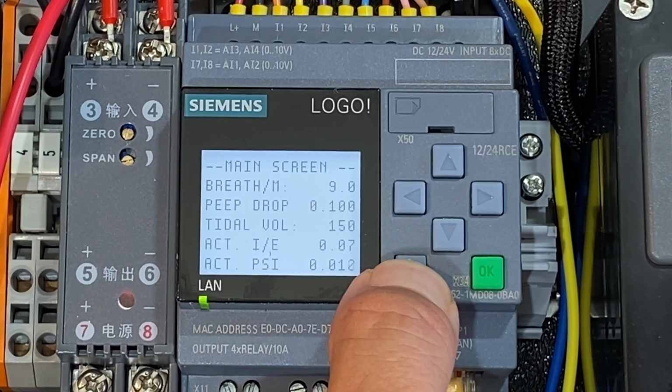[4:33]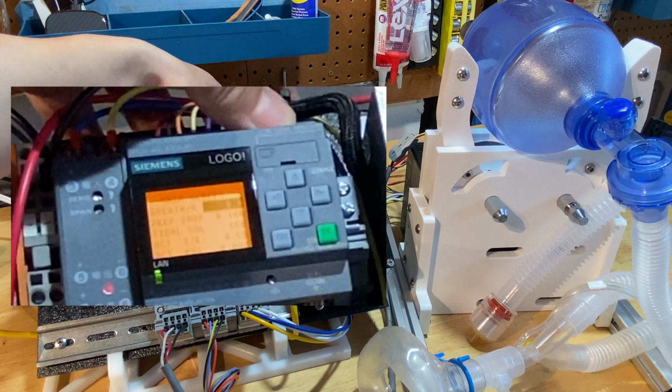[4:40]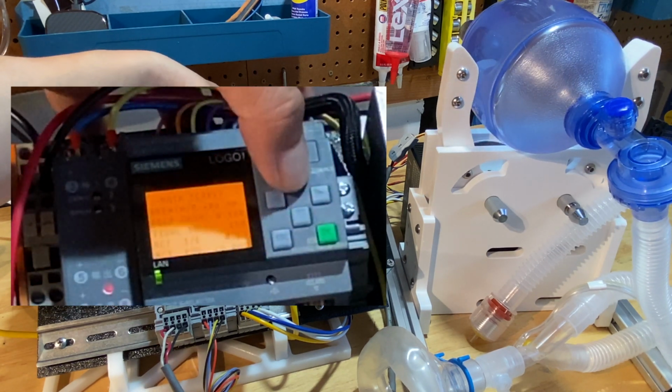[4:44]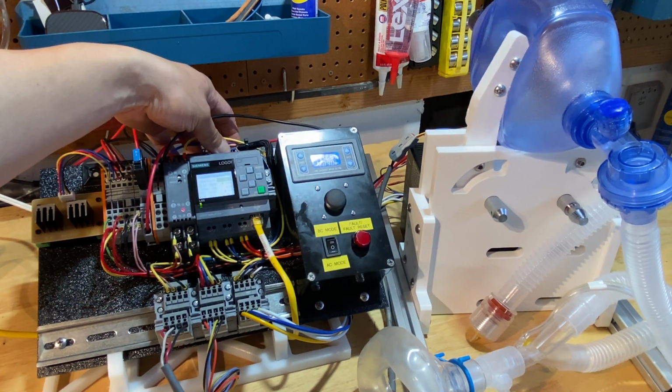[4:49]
This is the main screen, and this is where you set how many breaths per minute. And if you hold the escape button down for 2 seconds, it will highlight a cursor and allow you to change the values. Here I'll show you what happens if I increase the breaths per minute. I'll go from 9 to 29. So I have the breathing cycle set to 29 right now. And you can see as soon as the arms open, they pretty much immediately close.
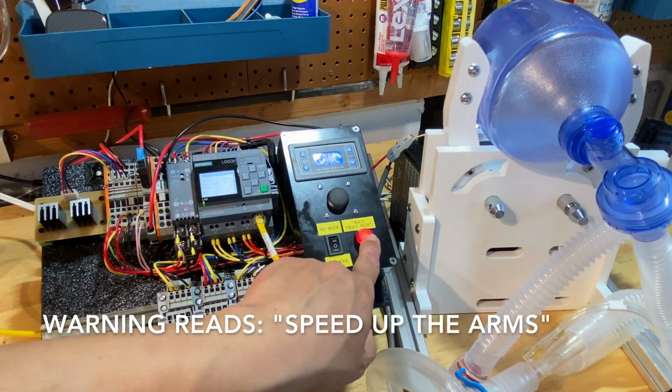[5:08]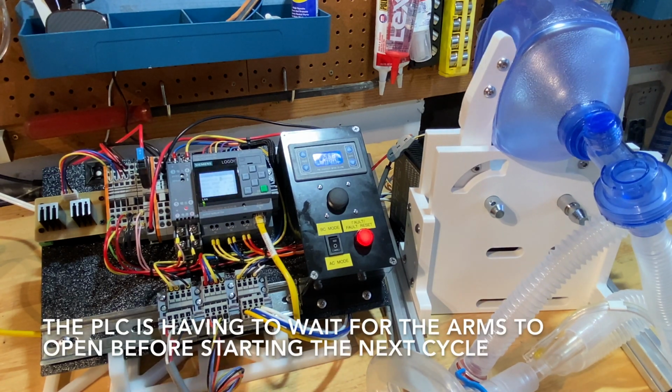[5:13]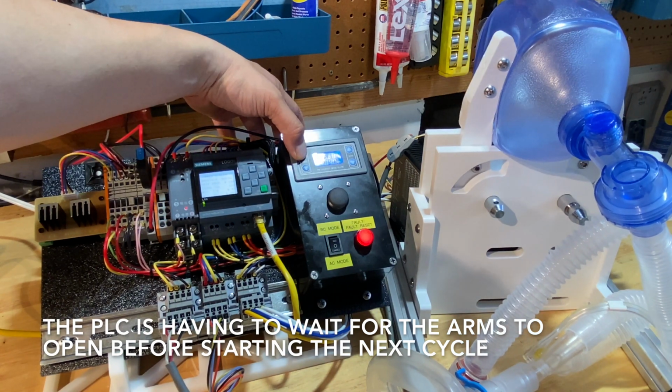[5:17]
Let's see what happens if we set the breathing cycle really high. I'll try 59. Now you can see that we're getting a red flash instead of an orange flash. And now we have an alarm pop up every cycle. And that's because the arms are not open all the way before the next cycle starts. So we have to increase the speed of the arms.
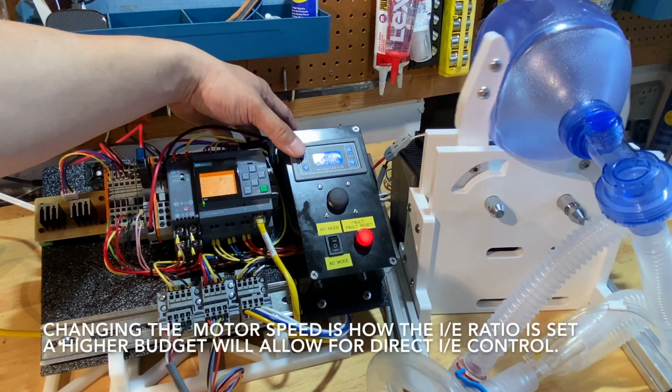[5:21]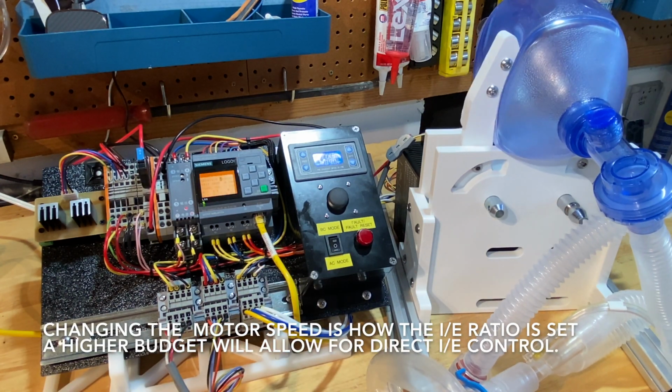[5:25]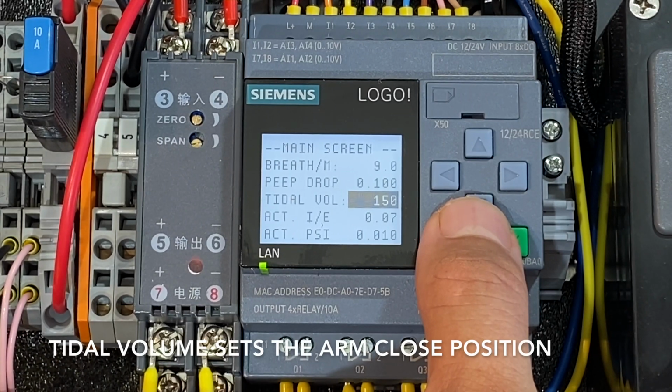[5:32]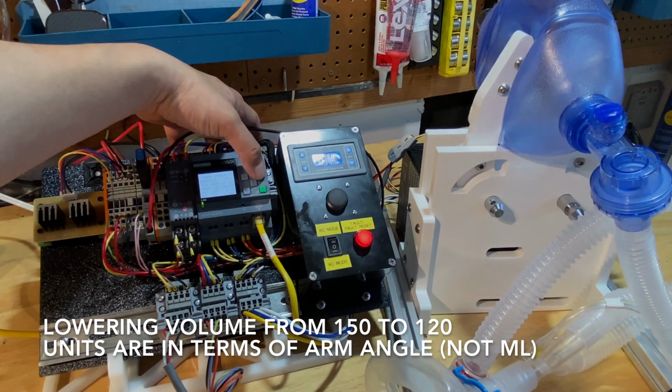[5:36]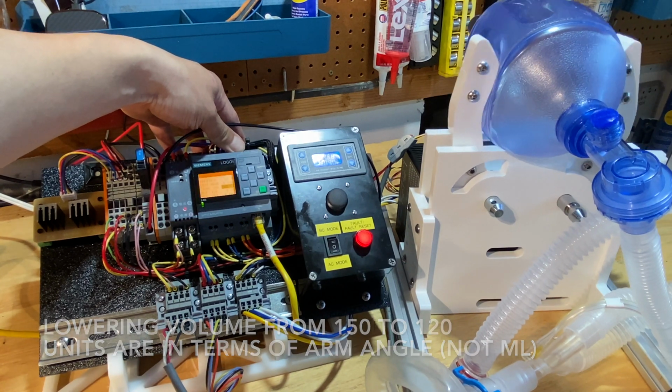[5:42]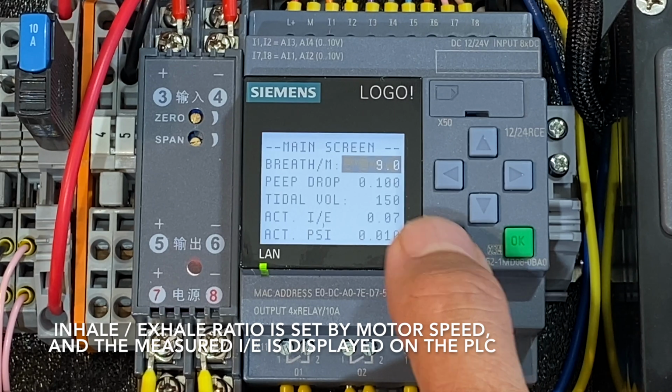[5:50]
And this is a really high breathing rate. Tidal volume is how far the arms close, so basically how much air is fed to the patient. So I'll go from 150 down to, let's say, 120. You'll see that the arms close less far. But changing the speed on the motor on the other control panel will change the I over E ratio, and it'll display what the actual ratio is measured.
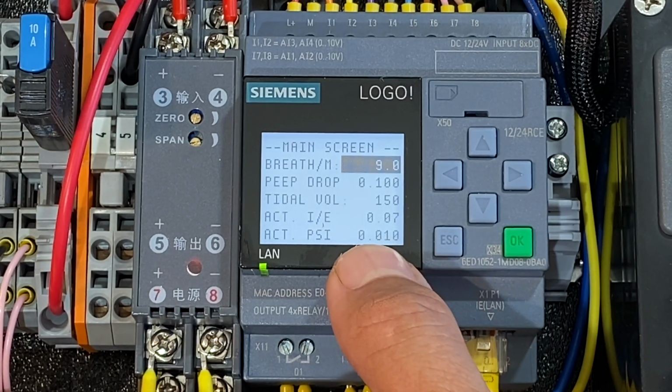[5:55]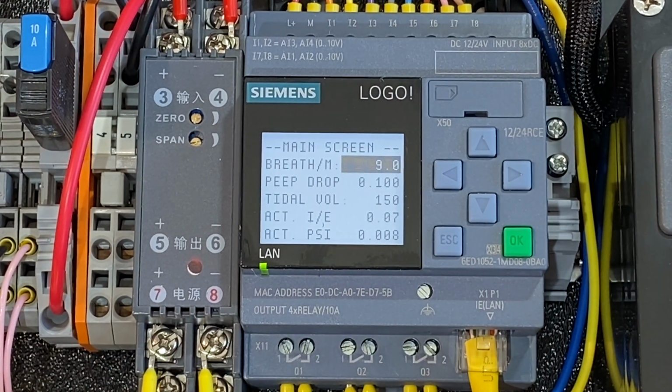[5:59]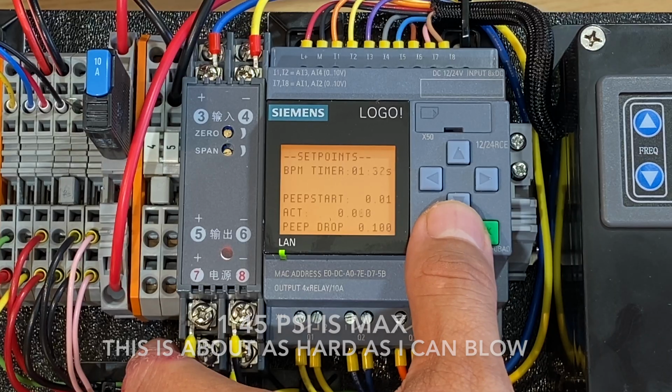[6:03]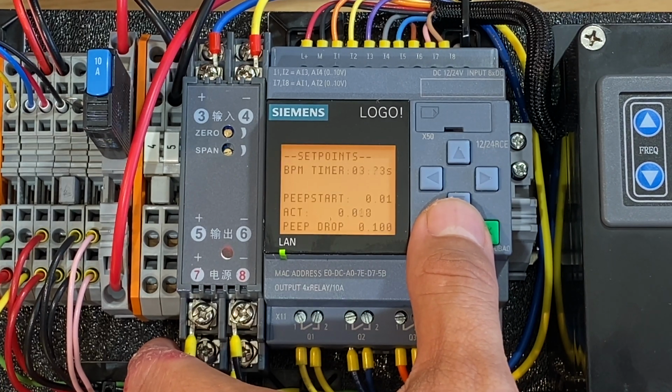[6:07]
And the actual PSI is measured here. If I blow into the mask, I can get it to go up. The next screen shows the breath per minute timer counting down. And this is counting down until it forces a breath.
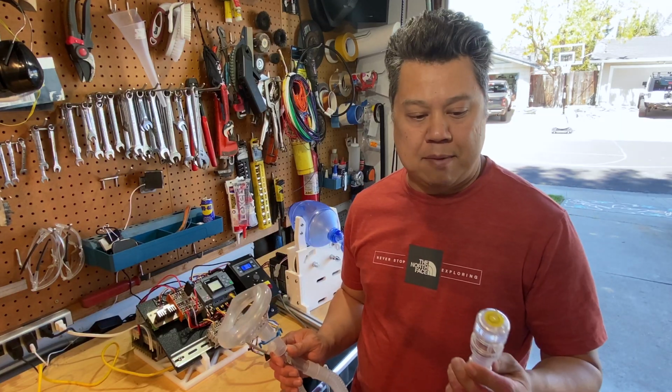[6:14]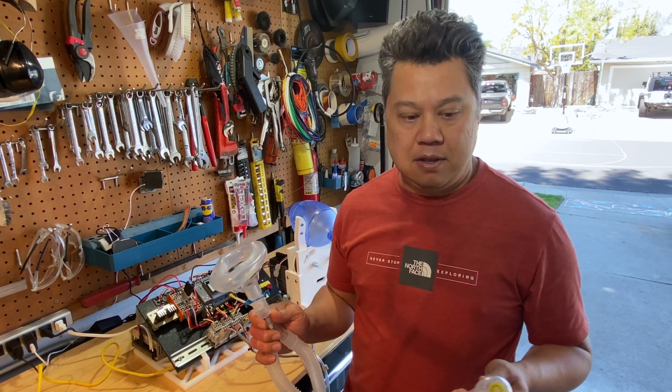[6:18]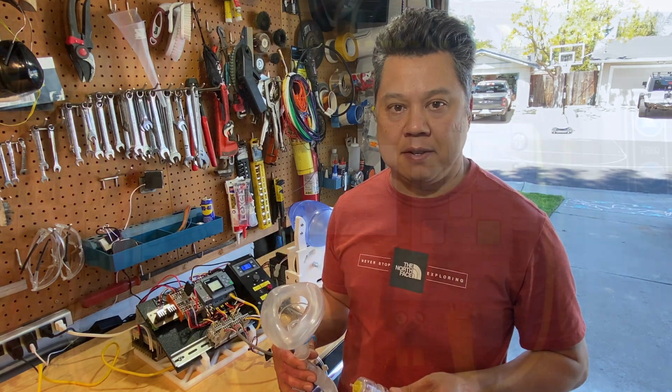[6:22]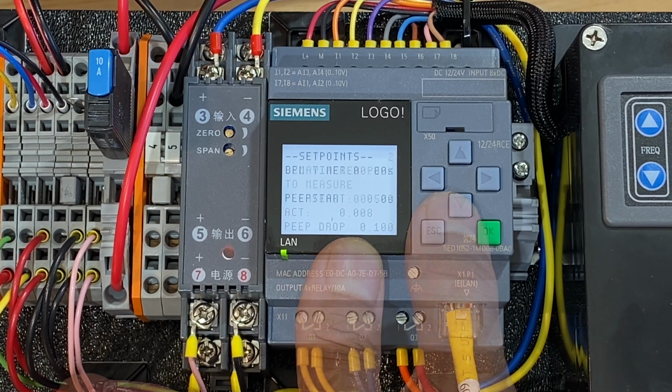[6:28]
PEEP start pressure is set by this mechanical PEEP valve, which is on the exhaust side of the mask. The PEEP valve maintains a certain residual pressure inside the patient's lungs. And PEEP drop is how far that pressure will drop when the patient's inhaling to trigger the next cycle. This set point is for timing when to measure plateau pressure after peak pressure is measured.
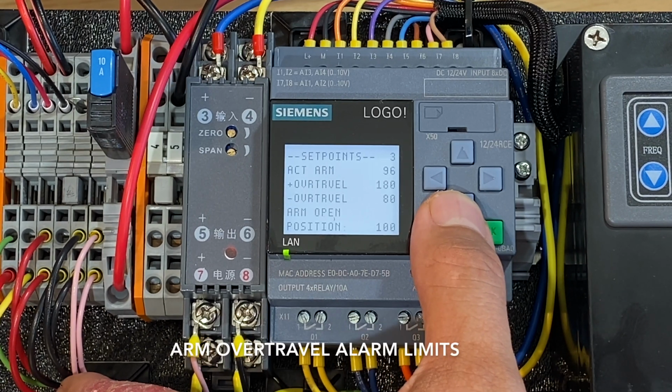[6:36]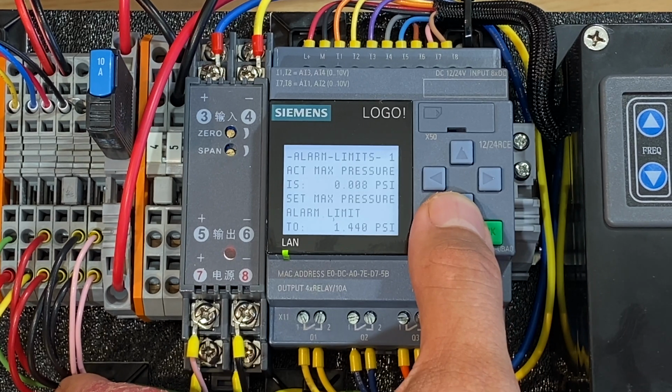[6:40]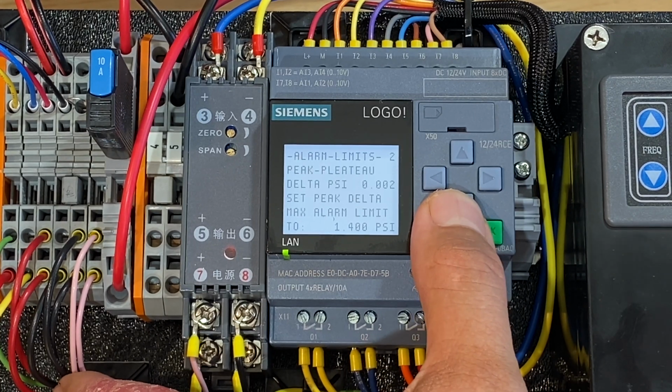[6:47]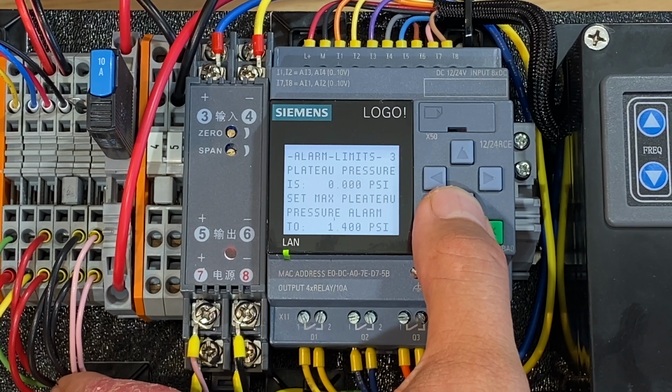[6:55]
So these are the alarm limits for positive and negative overtravel, as well as the open position. This is the alarm limit for max pressure, and I have it set to a really high number right now so I don't get alarms. This is the peak minus plateau delta pressure. So this is the difference between peak pressure and plateau pressure. This is max plateau pressure set point.
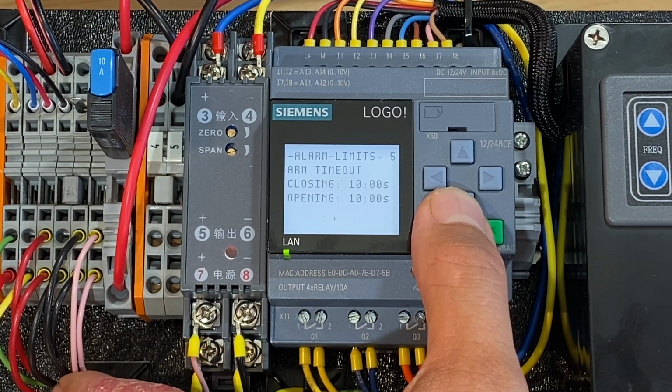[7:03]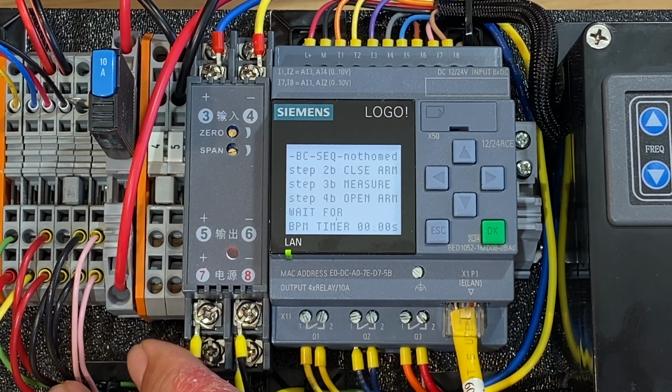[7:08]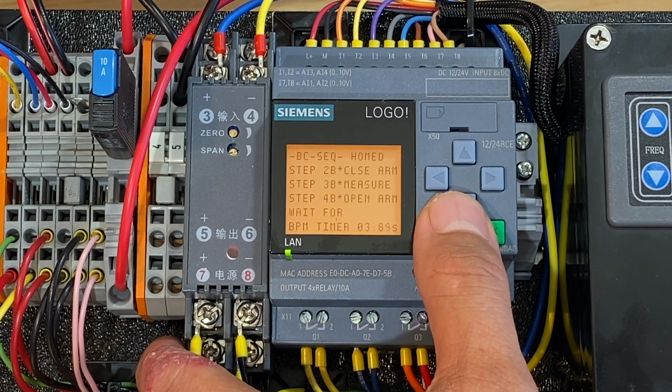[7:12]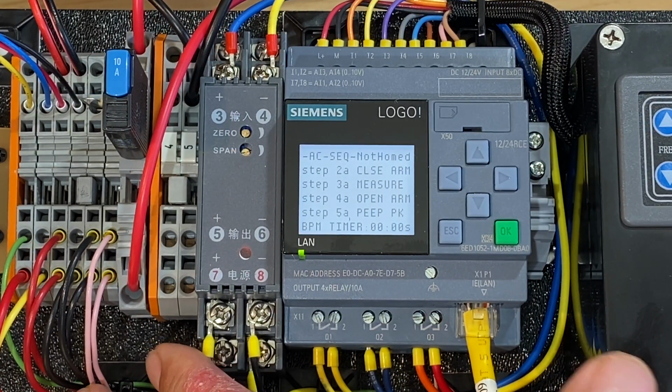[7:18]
These are timeouts for if the arm takes a really long time to close. For example, if the sensor fell off or broke, this would cause an alarm to occur after 10 seconds. When the machine's running, this is showing what steps in the sequence the machine's on. So you can see the little asterisks appear next to the steps that are currently running. And the same for AC mode.
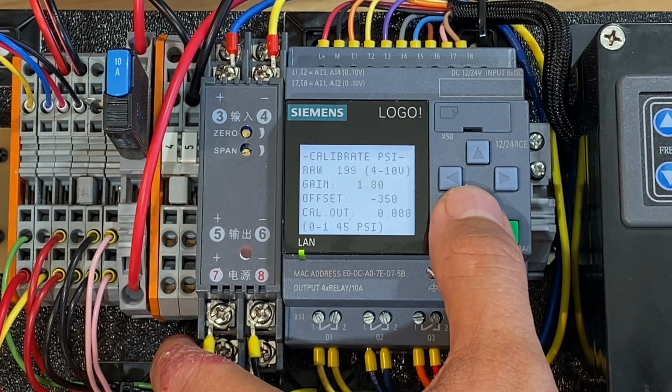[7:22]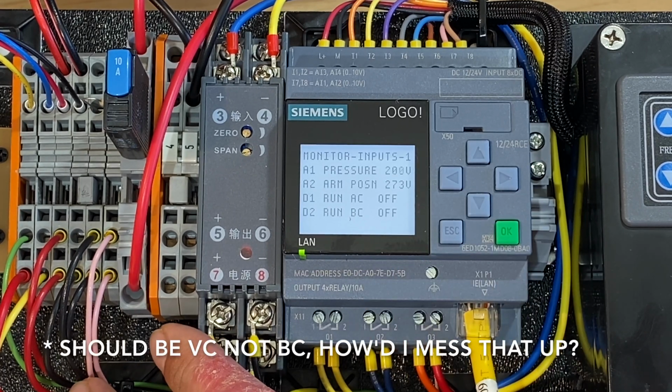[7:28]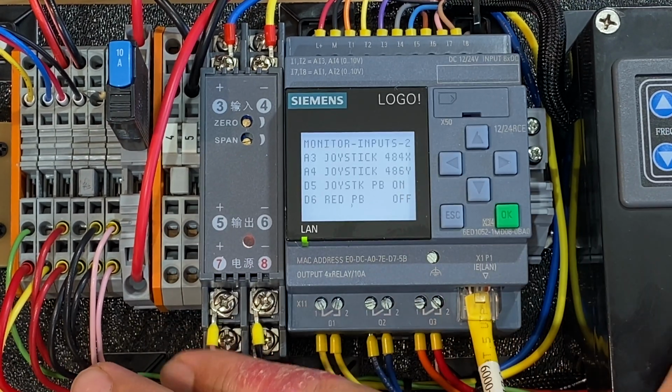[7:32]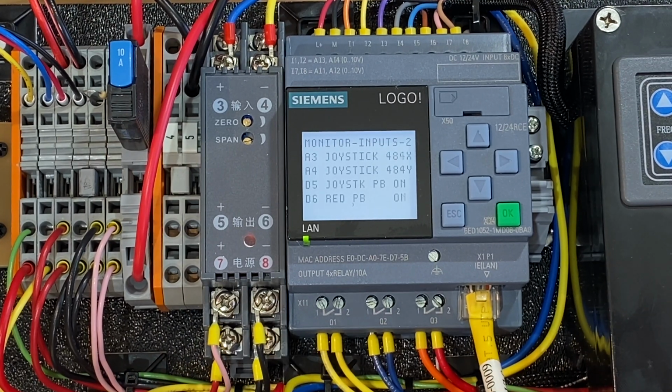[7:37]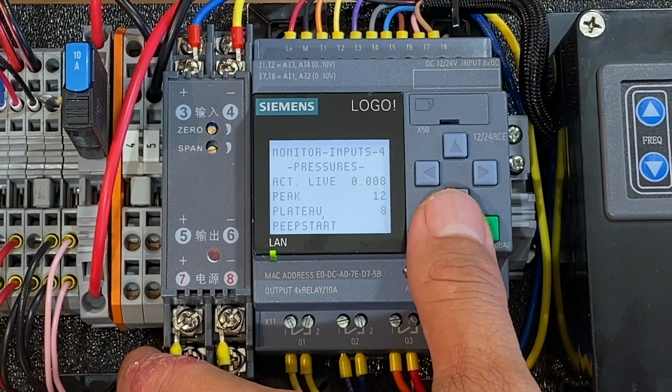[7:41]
This is for calibrating the air pressure sensor. These are the raw values for the sensors in terms of voltage. AC and BC are the two switches. This is the joystick, XY, and the push button. And the red button is the reset button. This screen is just displaying the various pressures that are measured throughout the cycle. So we have live pressure, peak pressure, plateau pressure, PEEP start pressure.
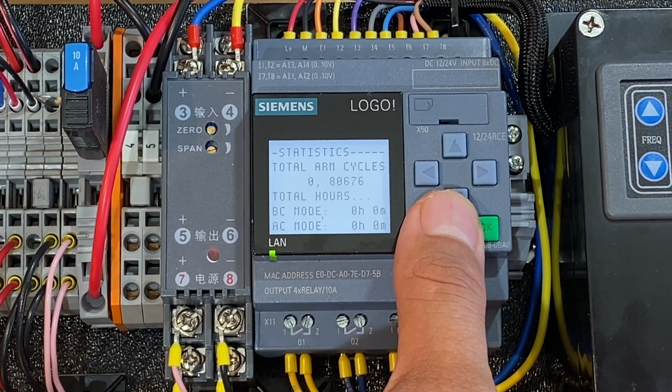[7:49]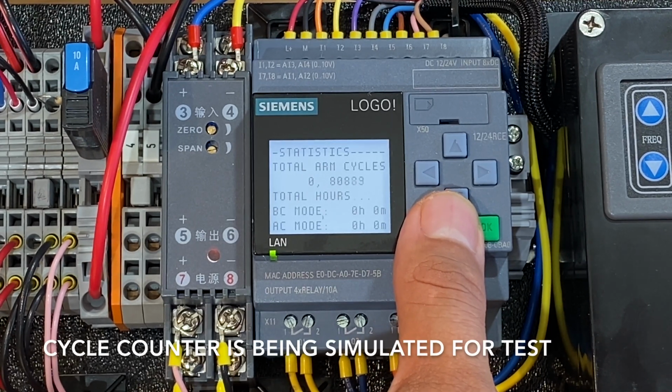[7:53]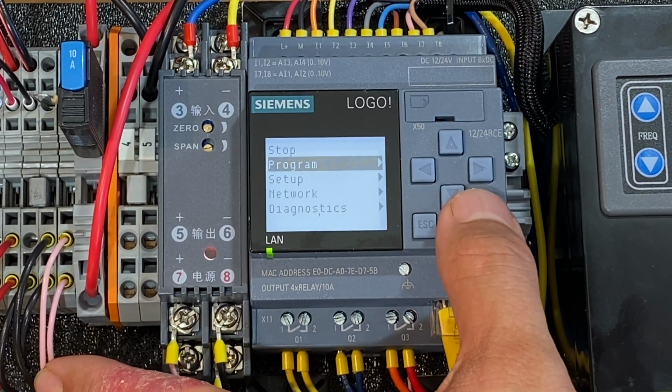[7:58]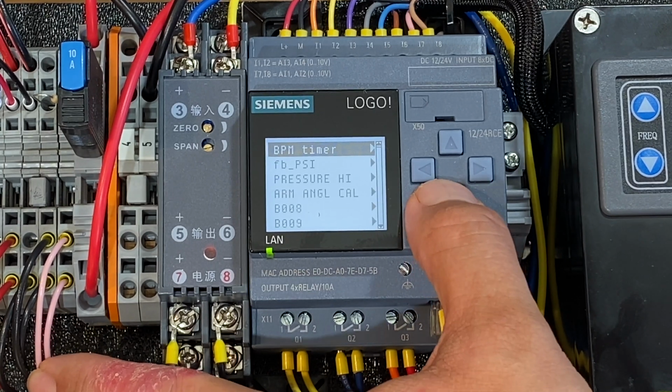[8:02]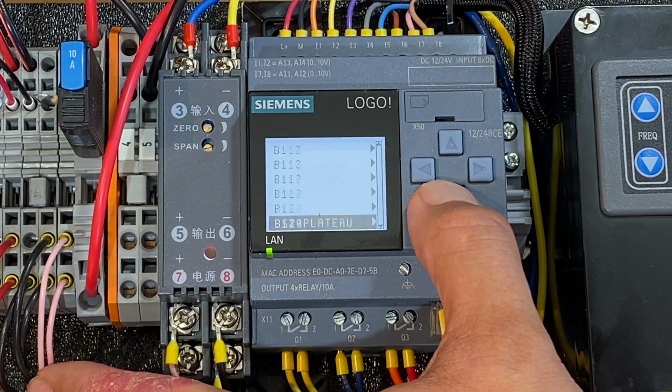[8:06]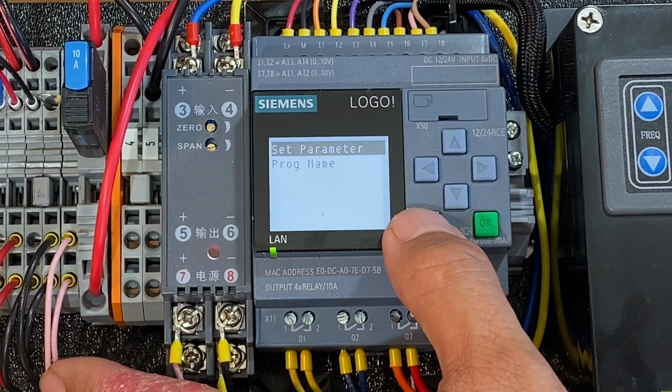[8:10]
This is a statistics page showing how many cycles the arm has done and how many hours and minutes it's run in BC or AC mode. For any variables that I didn't put on the HMI, they're also accessible without a laptop by exiting the program. And you can see all the variables here that are in the PLC. So it's nice that you can modify any variable without a laptop.
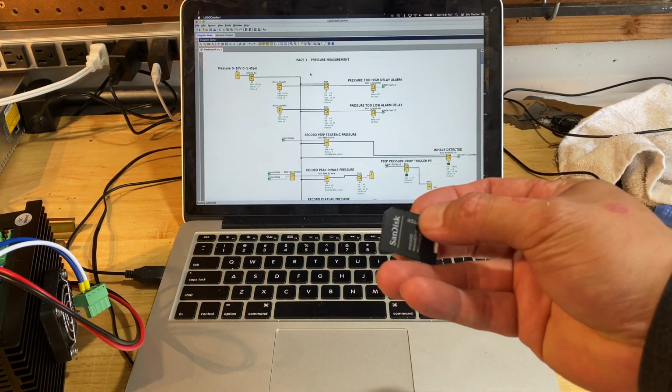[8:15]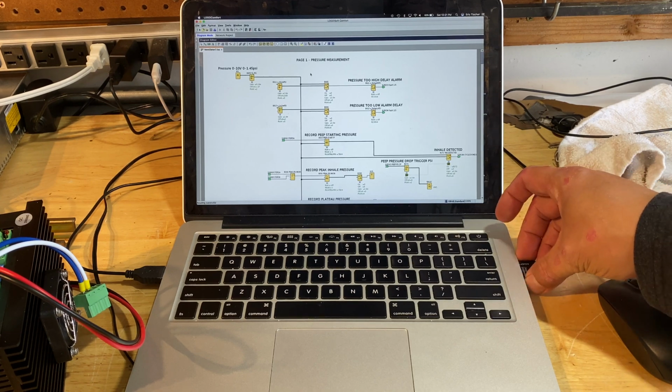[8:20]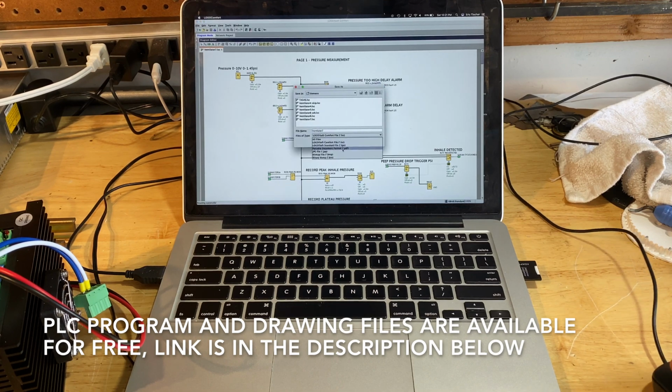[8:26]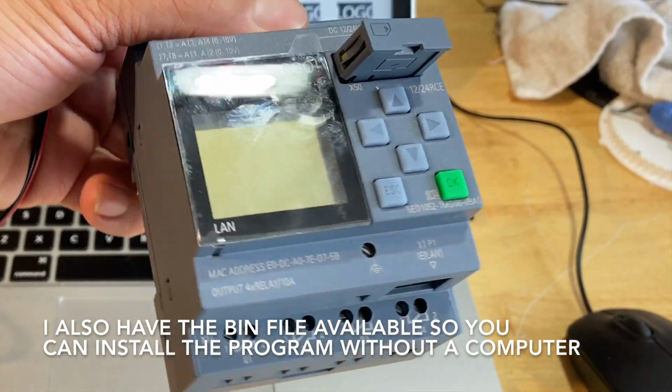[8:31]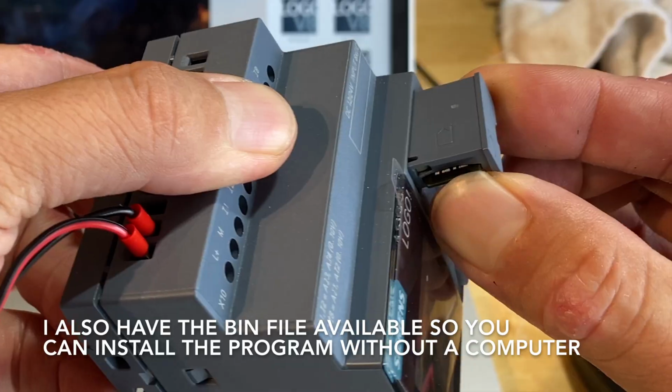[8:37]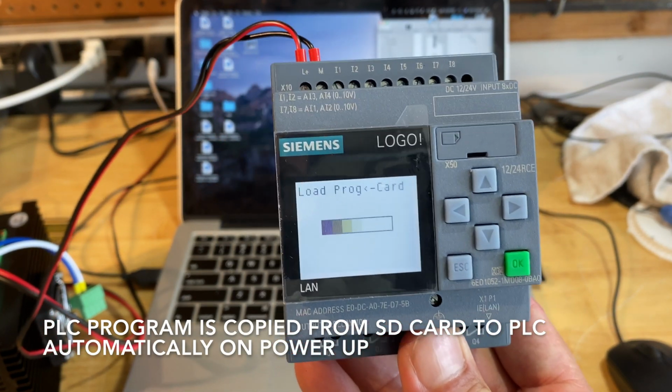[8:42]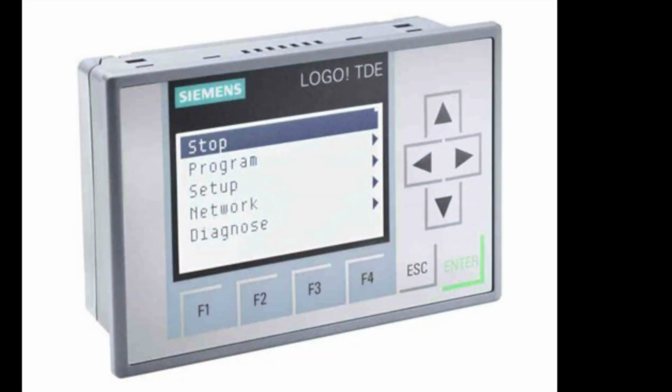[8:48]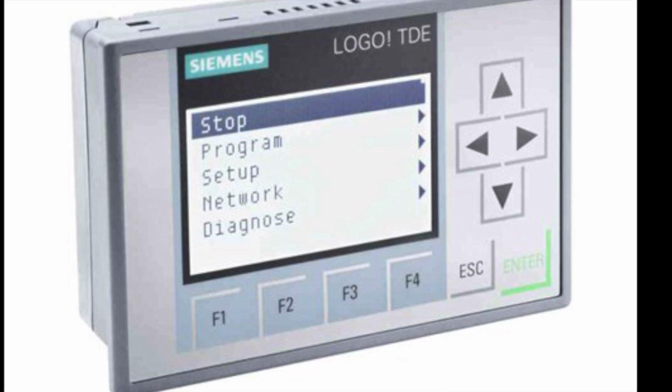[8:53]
I wanted to quickly show how to install the PLC program into the PLC. I just use an SD card and save the file as a .bin. Here's my PLC, and the card goes in upside down from what you would think. When the PLC powers up, the program is automatically loaded from the SD card into the PLC's memory. Panel mount LCD screens are also available with a little bit more space for displaying characters and a couple extra function buttons.
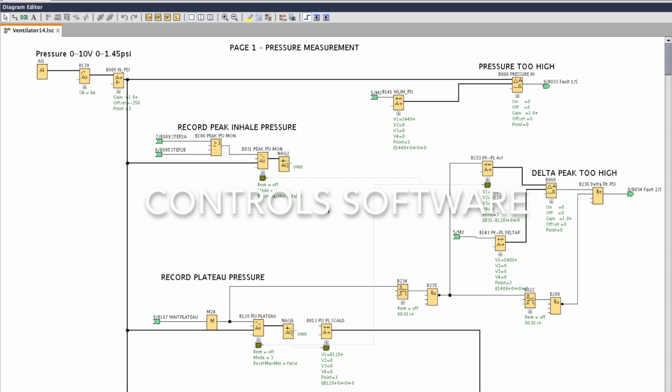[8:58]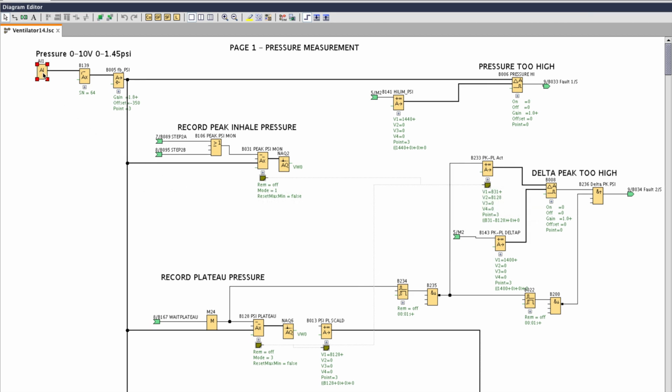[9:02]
This is what the PLC program looks like. I'll give you a quick run through all the pages. At the top left, this is the analog input that's connected to the pressure sensor. Goes through a filter and then a scaling block. At the top right, that's our max pressure alarm limit. And this is the comparator that compares it to the actual pressure and generates an alarm. And the code's the same for all the other pressure limits.
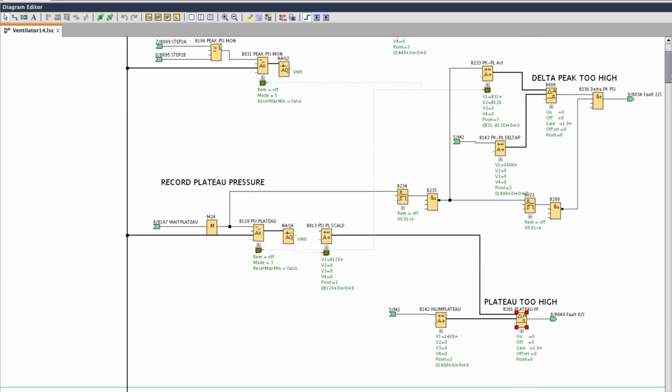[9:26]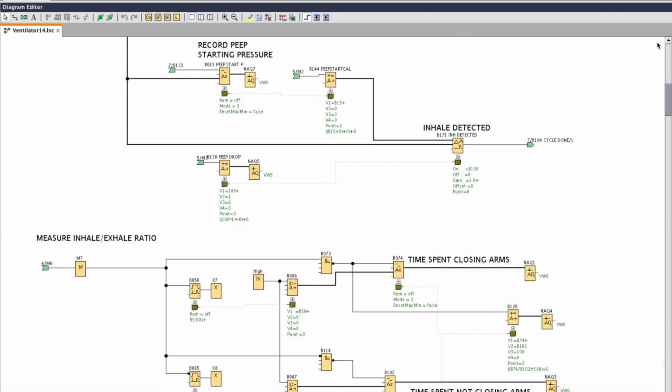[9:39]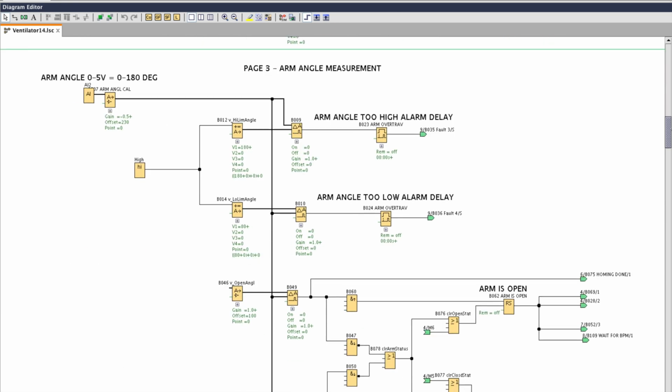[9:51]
If we scroll down, you can see where we're recording the starting PEEP pressure in a sample and hold function and comparing it to the set point. And that's how we know when an inhale was detected. Scrolling down, this is how we're measuring the I over E ratio. This is the number of milliseconds the arms are closing divided by the number of milliseconds that the arms are not closing.
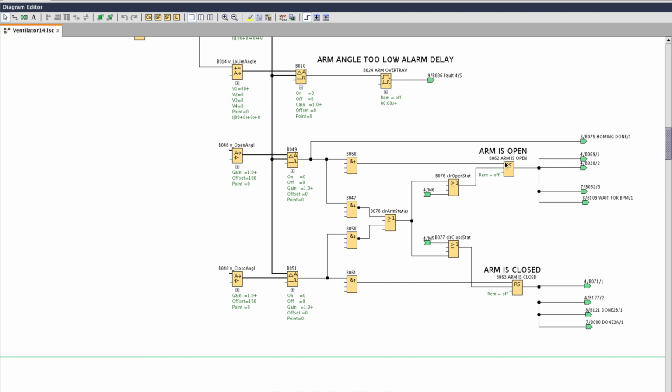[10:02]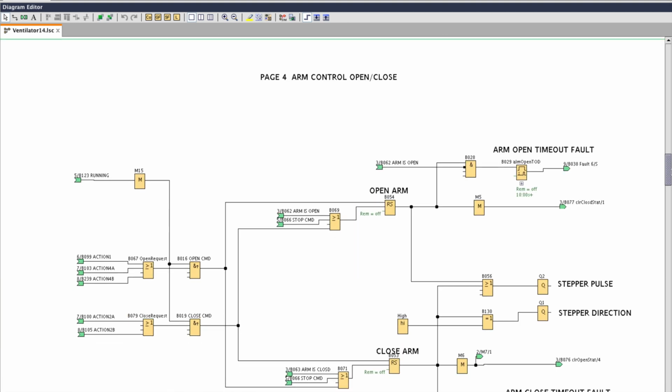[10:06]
Scrolling down, we have analog input 2 at the top left, which is the angle position sensor. And we have the alarm limits for over travel. We have the stop limits for opening and closing the arms. And if we scroll down, we have the two outputs that go to the stepper drive in the middle on the right side, stepper pulse and stepper direction. And above and below that, we have the timeouts in case the arms don't reach position within a few seconds. An alarm will be generated.
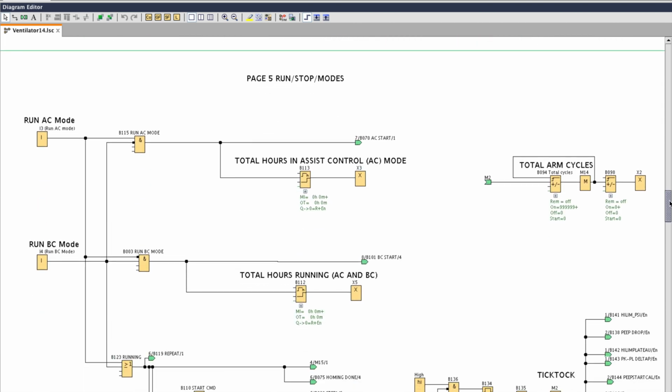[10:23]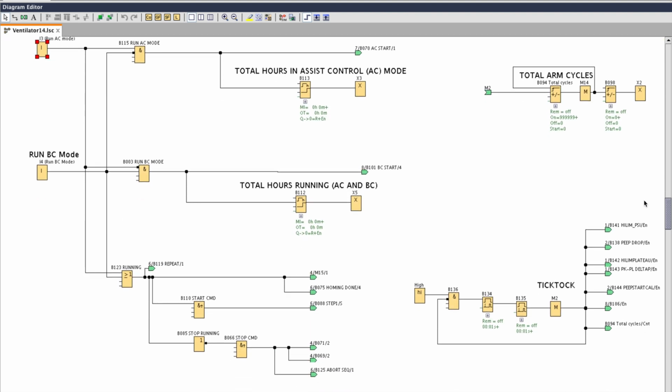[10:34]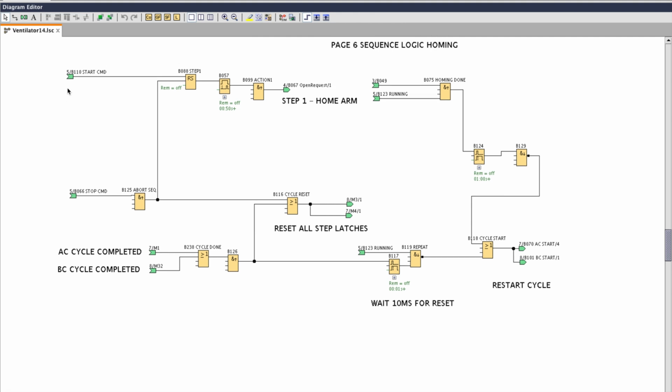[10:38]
Scrolling down to the next page, we have the two inputs for our mode buttons and some logic in there to record the total number of cycles and an hour counter for each mode. The tick-tock bit you see is just the pulse train, and that's used to update the math instructions. This is the homing sequence, and this happens every time you start the machine. Whether you're in AC or BC mode, the first thing it will do is home the arms, so it's telling the arms to open. When the arms are open, it goes on to start the normal cycle.
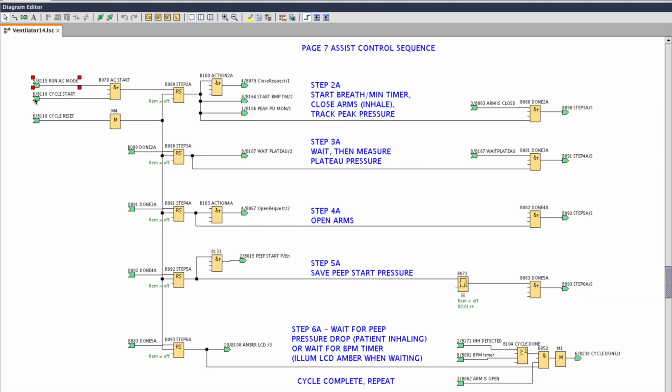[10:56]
This is the logic for running assist control mode. This is a step sequencer. First thing we do is tell the arms to close. When they're closed, we wait for plateau pressure to be measured. When that completes, we go on to the next step, which is open the arms.
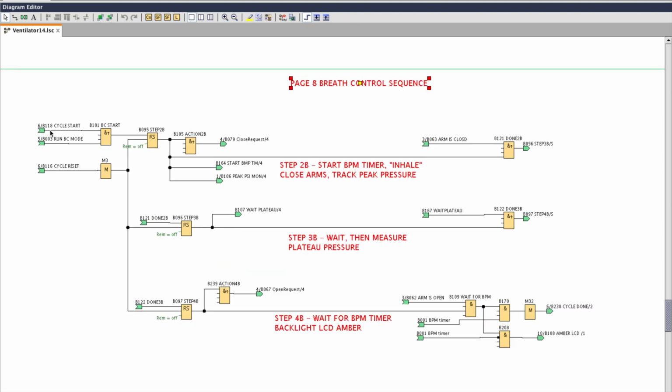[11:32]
Request the arms to close. When the arms are closed, we measure the plateau pressure. When that completes, we tell the arms to open. And on the final step, we're waiting for the arms to be open and the breath per minute timer to expire. If the breath timer has not expired, we turn the LCD amber.
You can negate one of the inputs on these Boolean instructions by double-clicking. You'll see a little dot there that indicates it's a not. When the cycle's complete, we restart and start the cycle again.
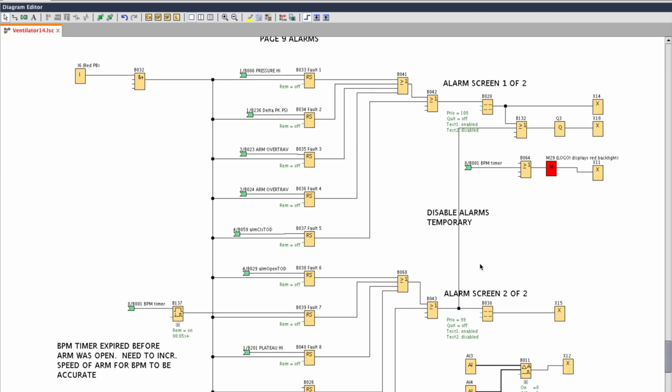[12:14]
This is the alarm screen. These are a list of all the alarms that we have, and they latch a flip-flop. And if we press the red button, that will unlatch the flip-flop to reset the alarms.
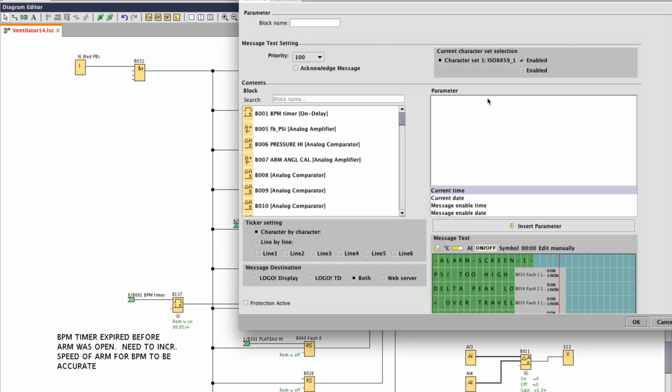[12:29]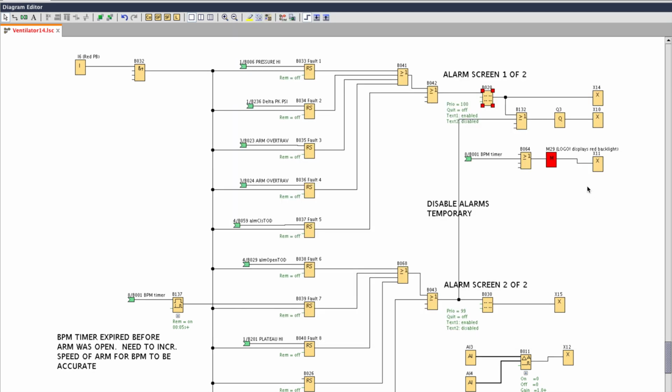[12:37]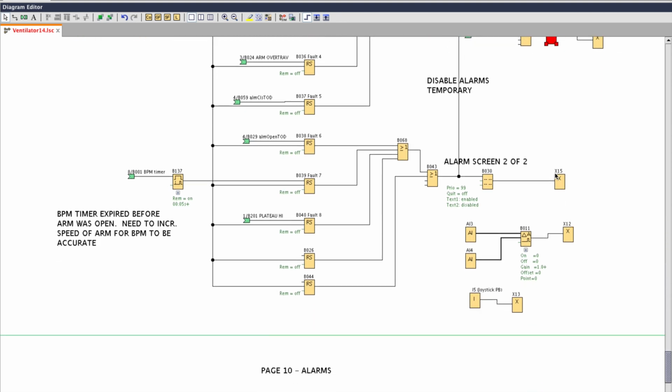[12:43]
This instruction I have highlighted is a message instruction, and that's how we write information to the screen. In the gray box, you can change the text displayed based on a Boolean value. This red block is what changes the backlight color of the LCD. There's also white and orange.
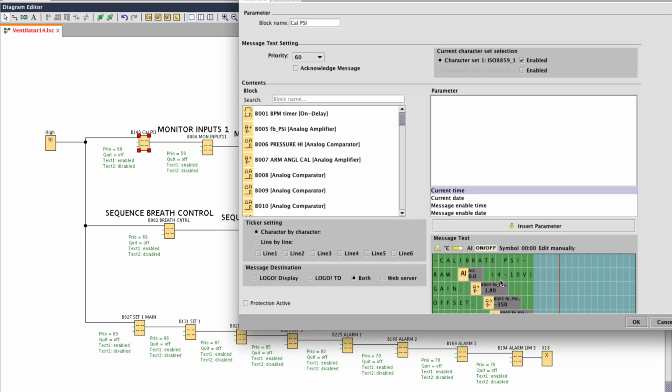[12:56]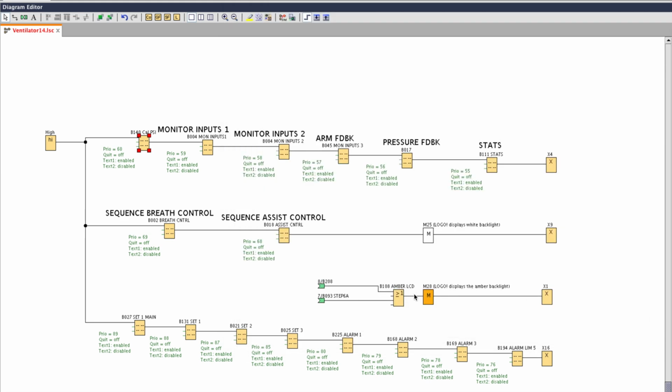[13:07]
Scrolling down to the last page now, these are the majority of the message instructions that I have in the PLC. So these are all the screens that you scroll through when the machine's running. And just like the alarm screens, you can configure what's displayed. Here I'm displaying an analog input value. On the other lines, I'm displaying things like gain or inputs to a math instruction.
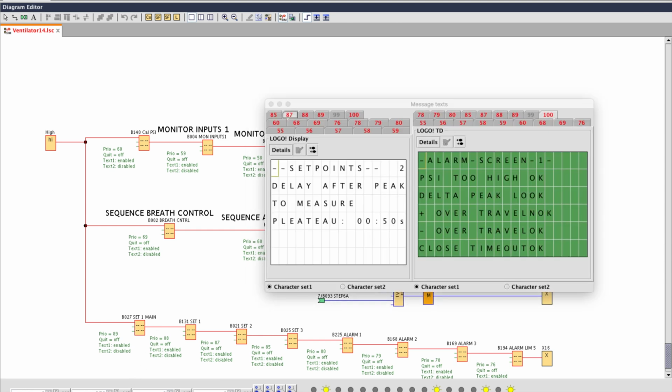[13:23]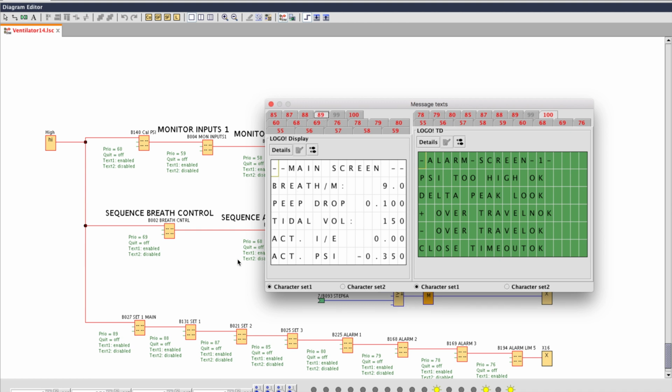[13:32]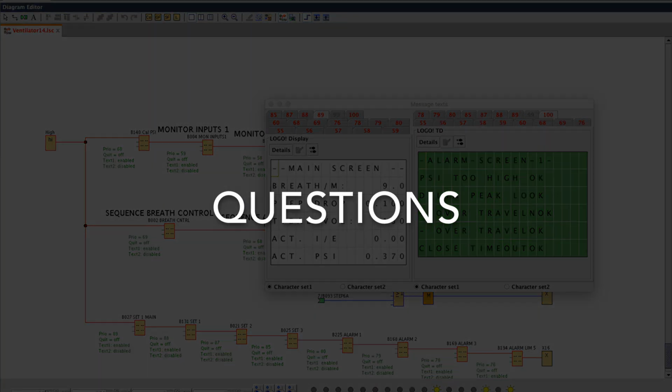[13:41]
We can click a button to simulate the PLC running on our computer, and we can scroll through all the screens to see what they look like, and you'll see the traces in the program in the background turn red if they're true. My screen capture got cut off a little bit on the bottom, but you can type in values for all the analog inputs. You can flip toggle switches for simulating the inputs. The light bulbs across the bottom are showing you the value of some of the Boolean memory addresses. You can also connect to the PLC using Ethernet and see all the values live for troubleshooting.
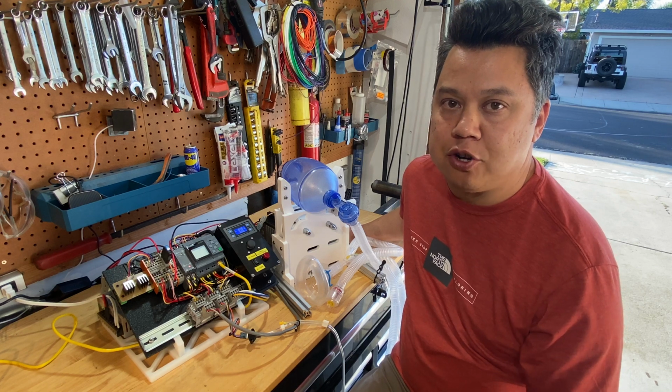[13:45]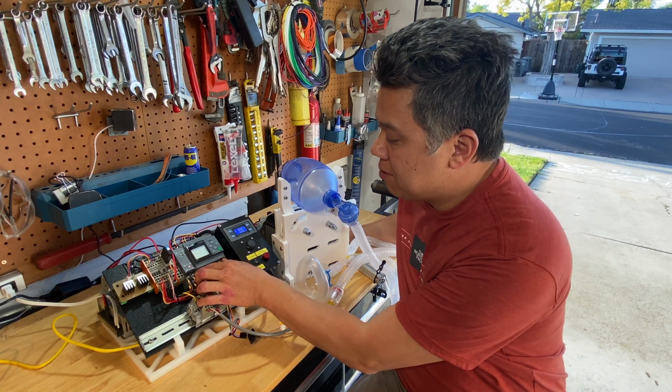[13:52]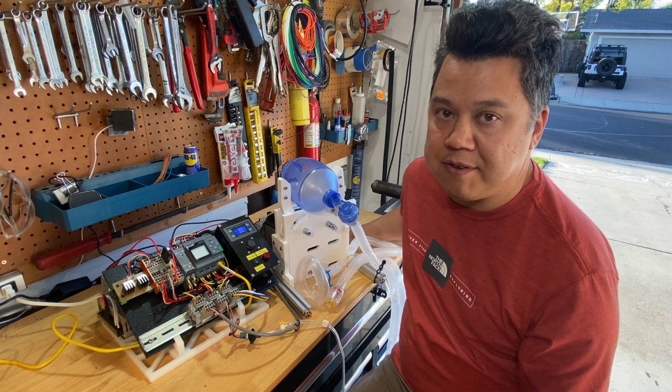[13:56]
I've been getting a lot of questions about why I chose a PLC instead of an Arduino or a Raspberry Pi. And for me, a PLC is more of a rugged device. It mounts on a DIN rail, has screw terminals that can take heavy gauge wire. The inputs are isolated. The outputs are rated 10 amps, where an Arduino is more of a circuit board based controller, where the inputs are 5 volt TTL. It doesn't have a built-in screen.
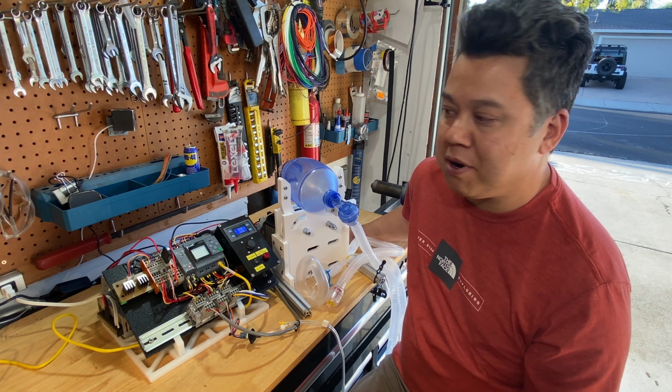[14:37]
And you can add a screen, but it's pretty tedious moving the cursor for every position when you want to write a variable. And I have about 20 screens, so programming that in an Arduino would be really tedious. A lot of the inputs are 10 volt or 24 volt inputs. And using an Arduino with a 5-volt input, I'd have to regulate the voltage for each one. You have to assemble a bunch of circuit boards, where this is just something quick and easy. Clips on a DIN rail.
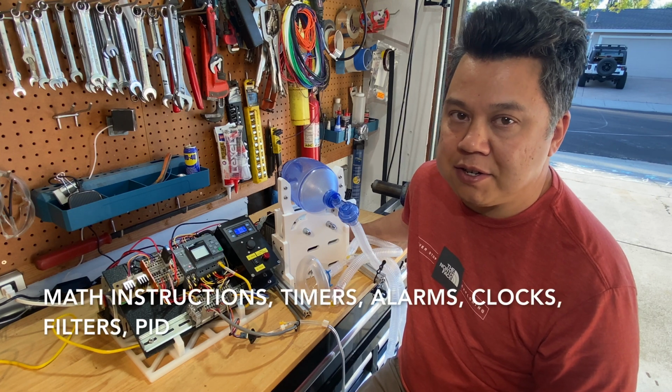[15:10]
There's a programming software for it that makes it easy to program. Listing all the variables and set points and being able to change them on the screen is just a built-in function, where with Arduino, you have to program that low-level logic. I like being one level above that kind of low-level programming. The software environment for programming PLCs is really user friendly. There's a lot of drag and drop tools for doing math instructions, for displaying variables on the screen, for example. And that just saves a lot of time.
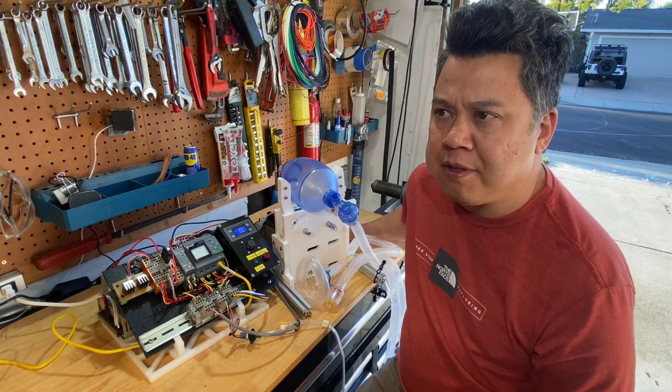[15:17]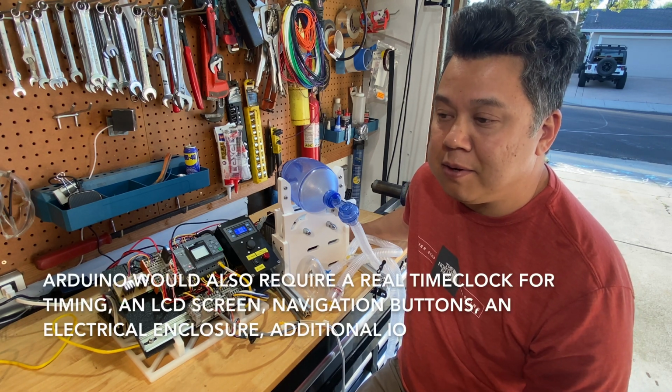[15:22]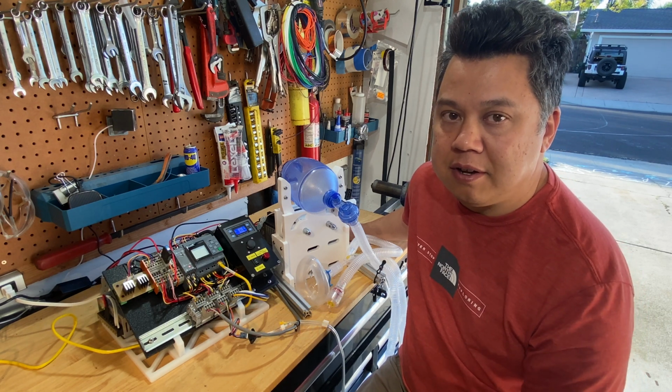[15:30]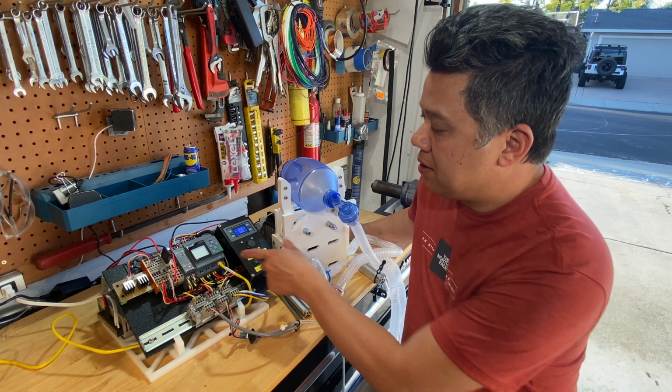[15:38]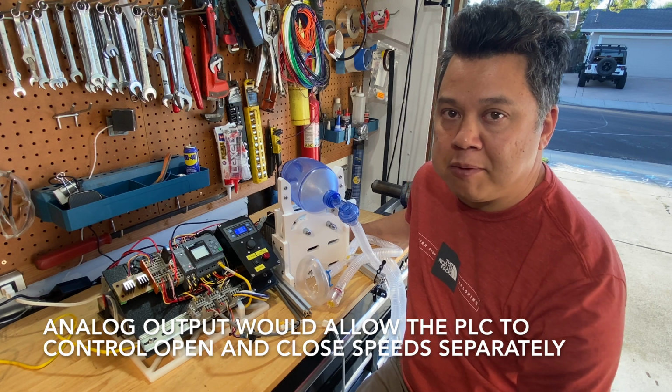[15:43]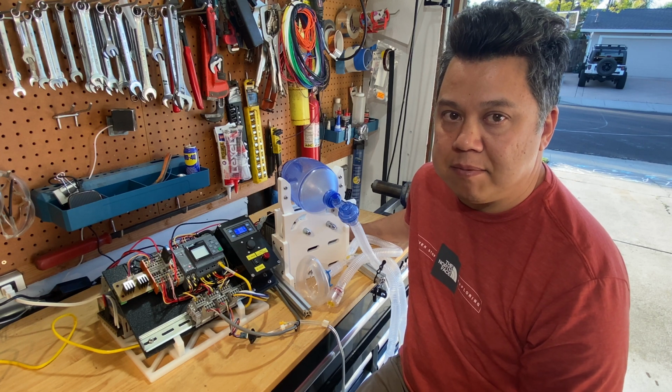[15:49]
The PLC was about $130 versus an Arduino, which is about $45. So it's a little bit more expensive. And an Arduino is better suited for controlling a stepper motor since they have a stepper shield for controlling steppers. I'm using relay outputs, which are also not suited for high cycle life, but they also sell extension cards so I can get an analog output or a solid state output from the PLC. But this is more of a proof of concept and just trying to get the PLC program to work. And if needed, I can always upgrade by adding those cards later.